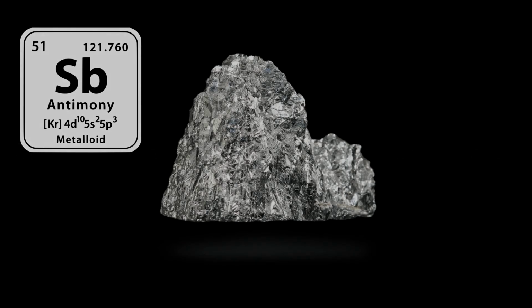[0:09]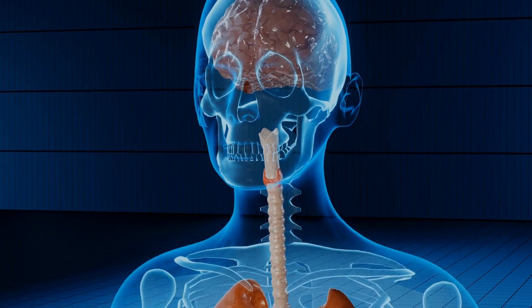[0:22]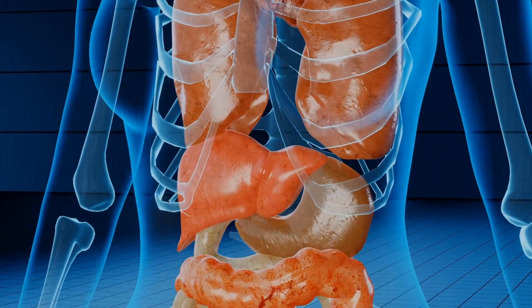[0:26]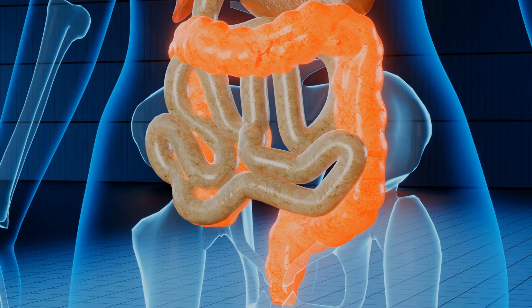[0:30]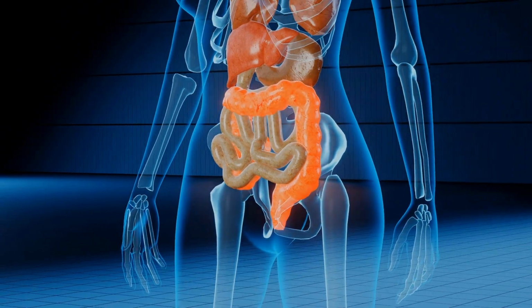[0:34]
Today I will show you how to build an antimony pH meter. It would be suitable for a lab on a chip as it can be miniaturized. It has already been used in medicine as a gastric probe to measure the pH value of stomach acid. Further applications in medicine would be to measure the pH value of blood or urine.
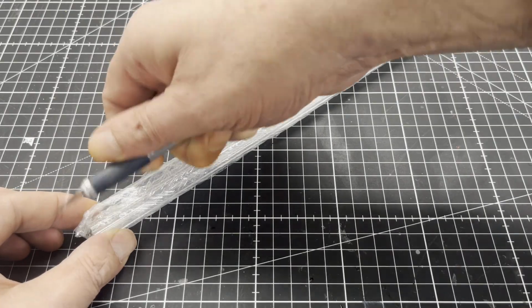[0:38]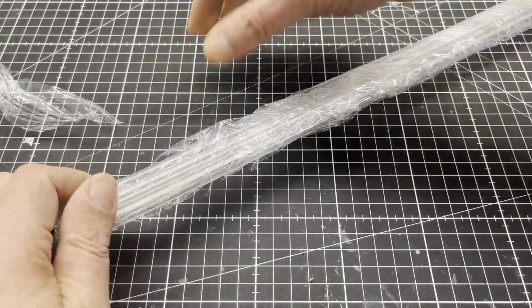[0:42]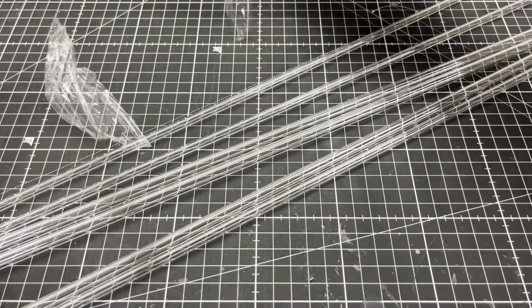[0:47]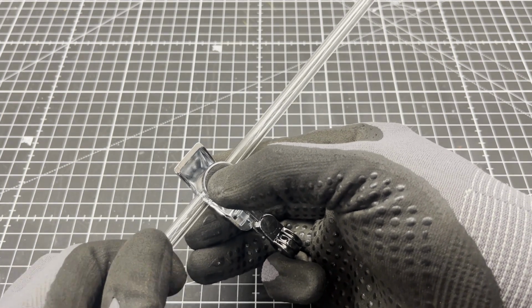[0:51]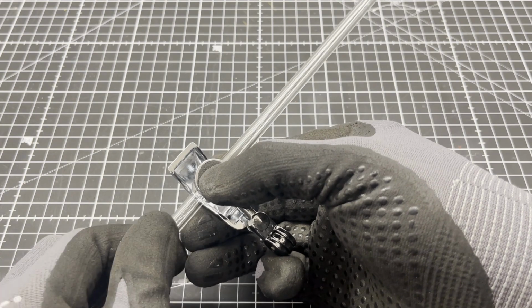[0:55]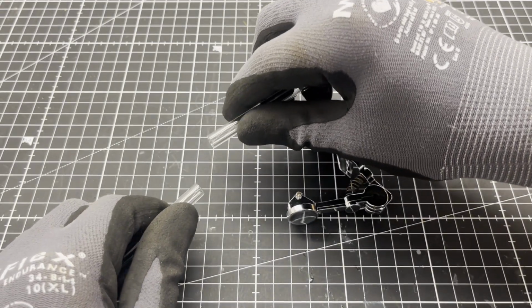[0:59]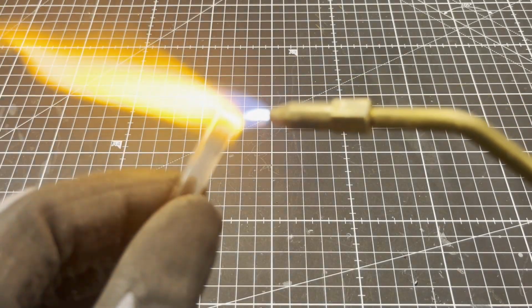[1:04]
So let's get started. I picked up borosilicate glass tubing 8 by 1.5 and 6 by 1.5 millimeters from a local glass blowing company. I used a glass tube cutter to cut 100 millimeters of the 6 millimeter glass tube to size. Then I fire polished the sharp ends of the glass tube.
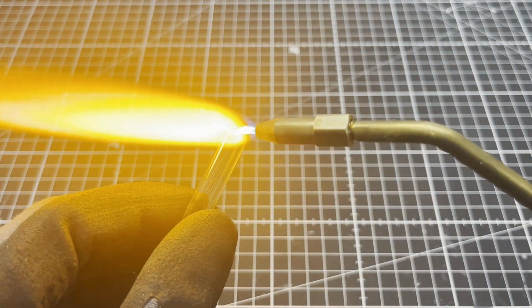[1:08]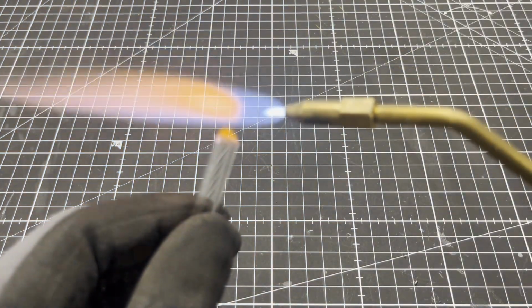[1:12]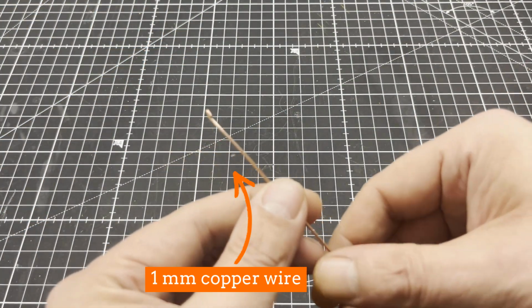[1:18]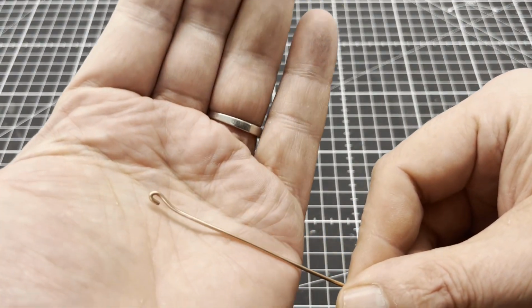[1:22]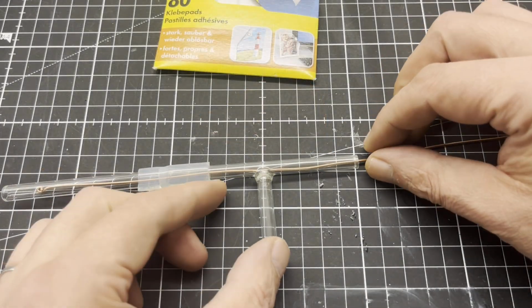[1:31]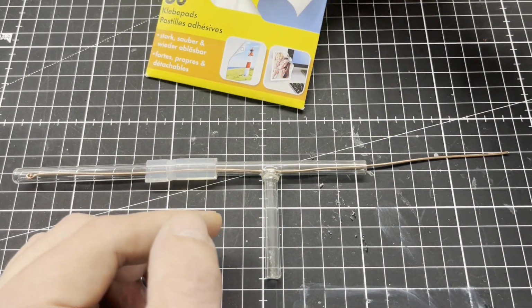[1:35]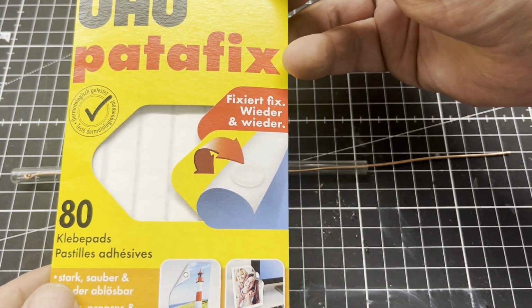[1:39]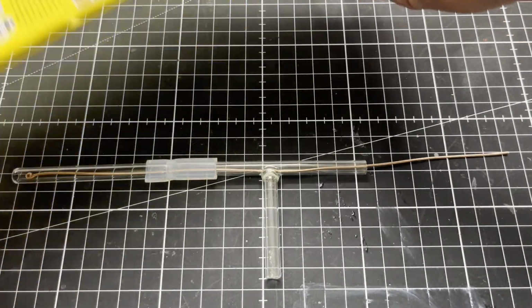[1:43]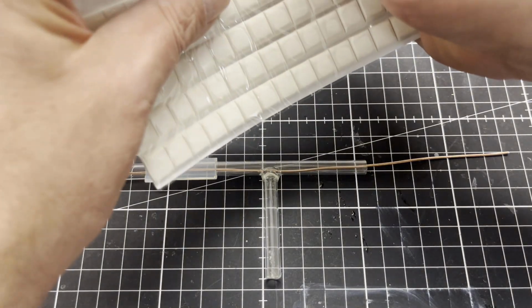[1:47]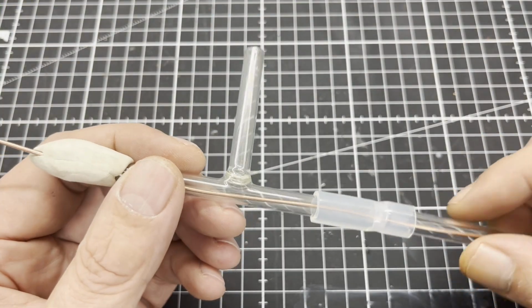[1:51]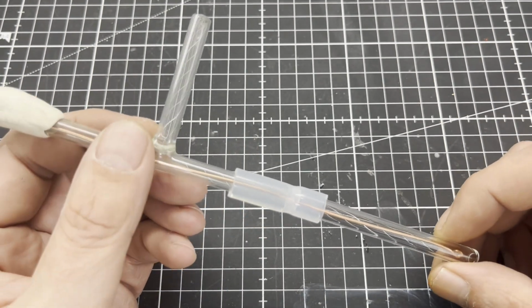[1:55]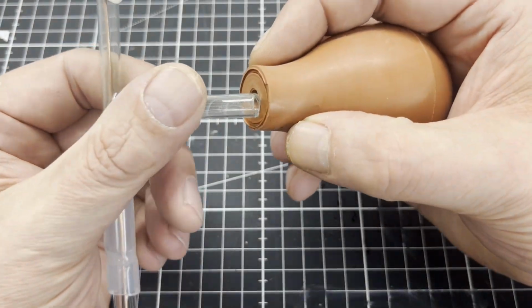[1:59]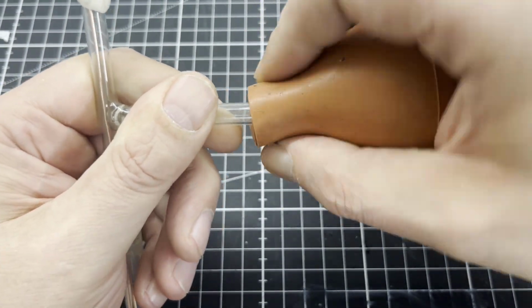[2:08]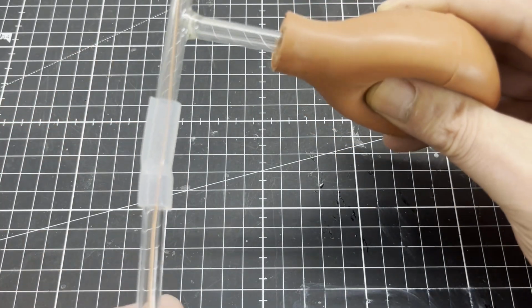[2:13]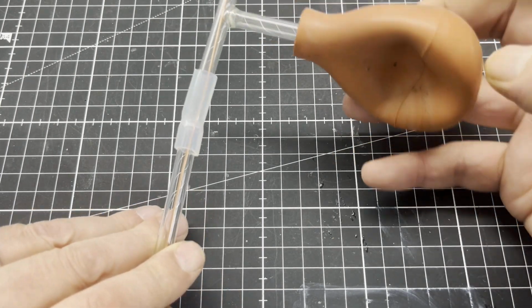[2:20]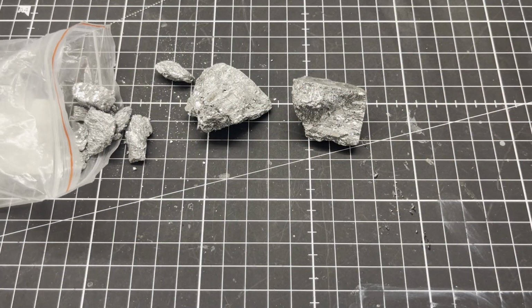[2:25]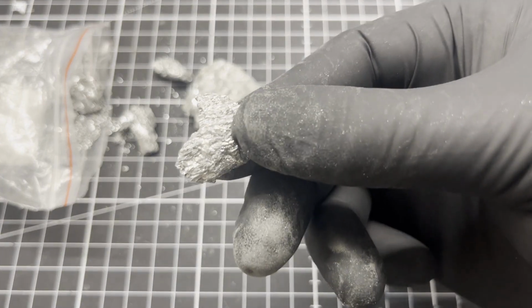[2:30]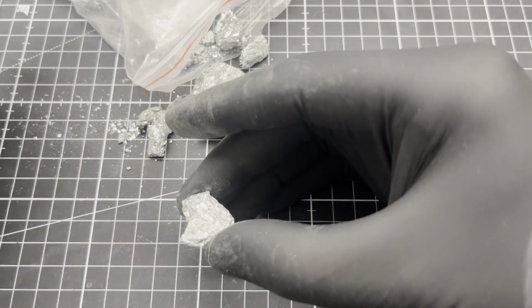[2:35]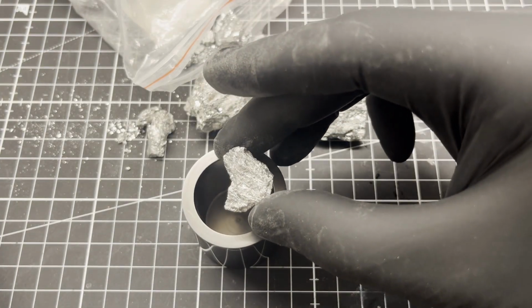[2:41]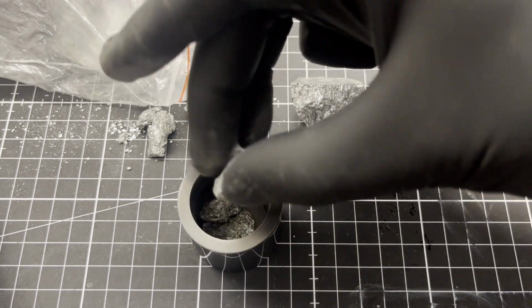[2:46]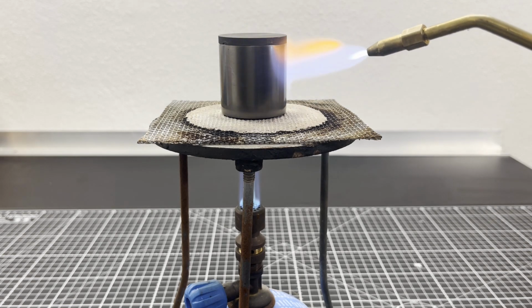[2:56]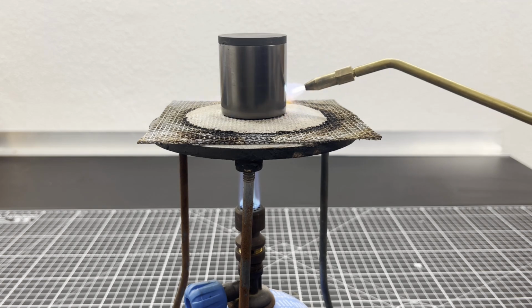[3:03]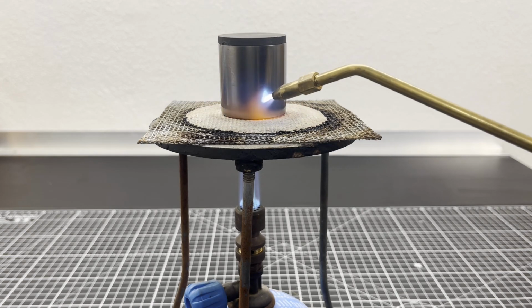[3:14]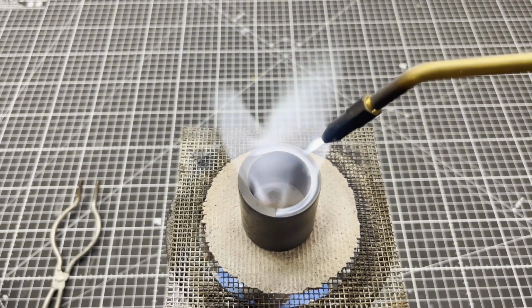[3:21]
The small apparatus is used to suck liquid antimony into the 6 mm glass tube. I strongly recommend using a graphite crucible, as the forming antimony trioxide is reduced back to elemental antimony when heated with carbon. The blue flame you see here is burning carbon monoxide.
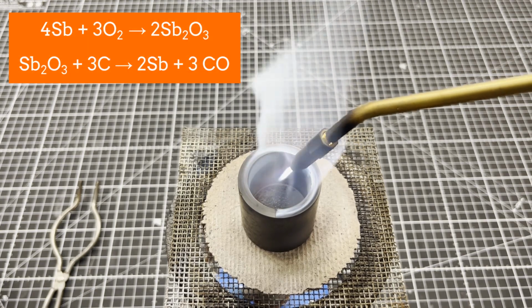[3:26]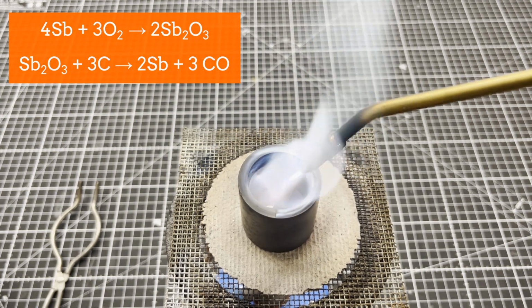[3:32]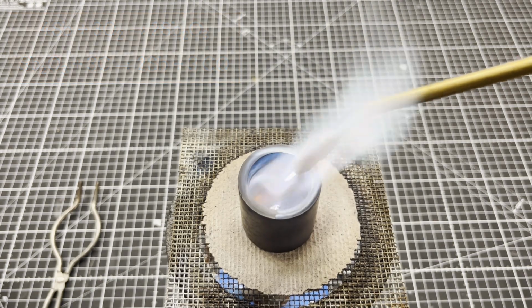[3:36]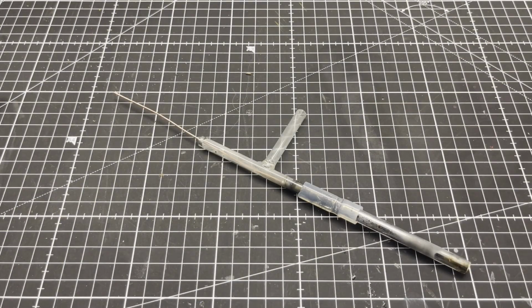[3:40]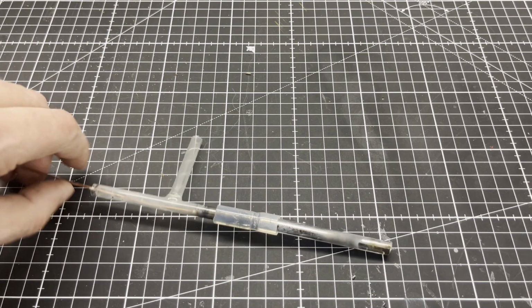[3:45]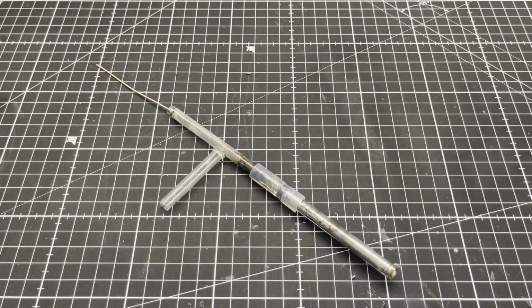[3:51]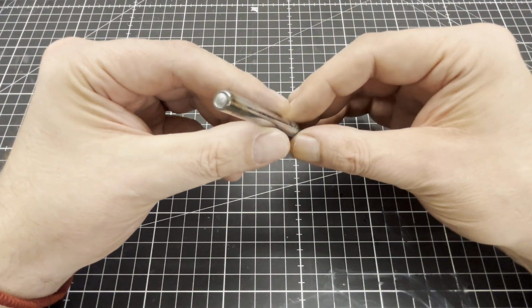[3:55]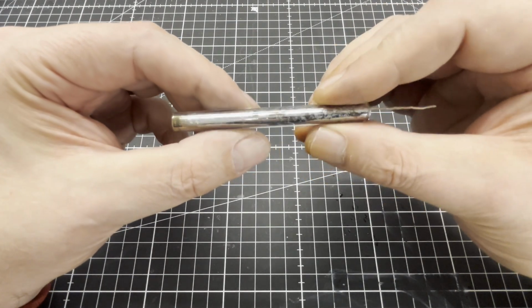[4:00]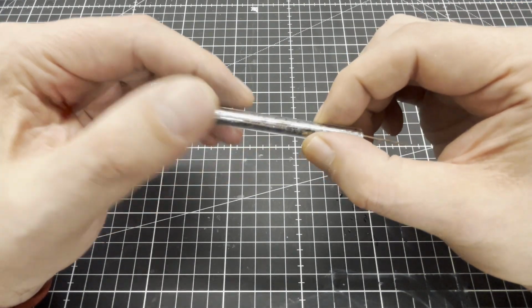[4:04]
After the antimony had melted, I dipped the apparatus with a squeezed suction ball into the antimony and then released the ball so that the liquid antimony rushed into the 6 mm glass tube. Unfortunately, I lost this footage. Here you can see the antimony electrode after it has been removed from the apparatus. The copper wire is also melted in and thus creates a galvanic connection to the antimony.
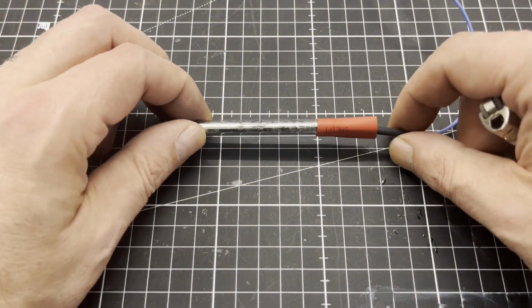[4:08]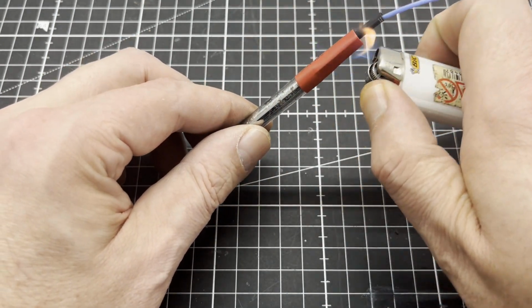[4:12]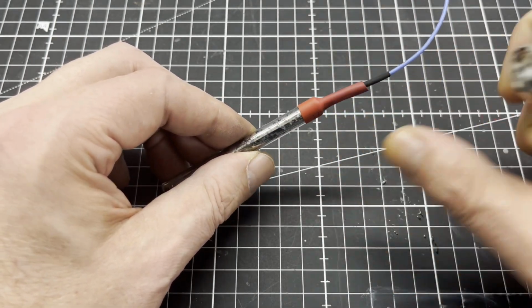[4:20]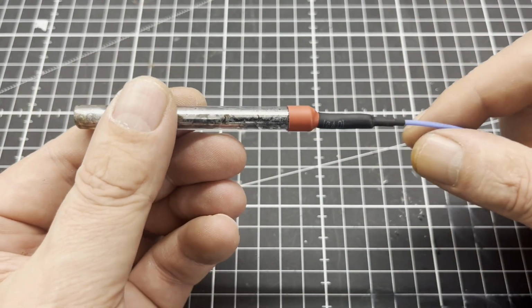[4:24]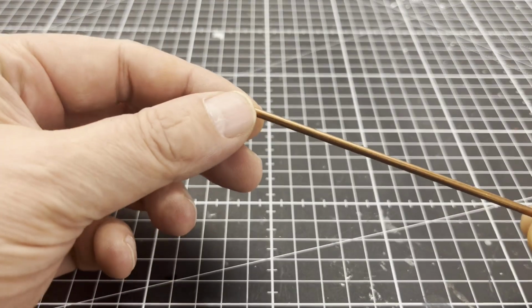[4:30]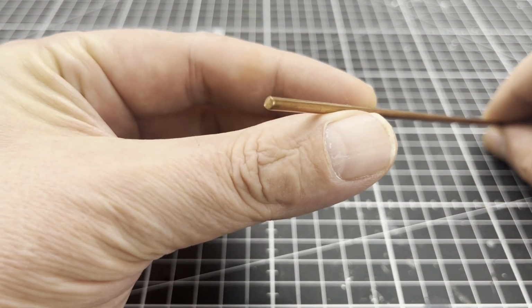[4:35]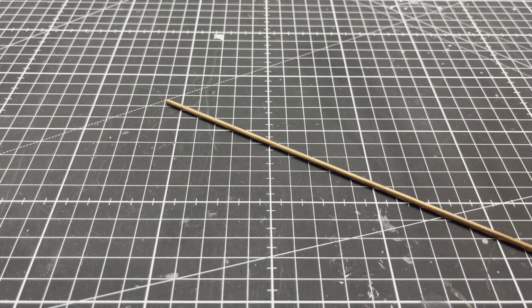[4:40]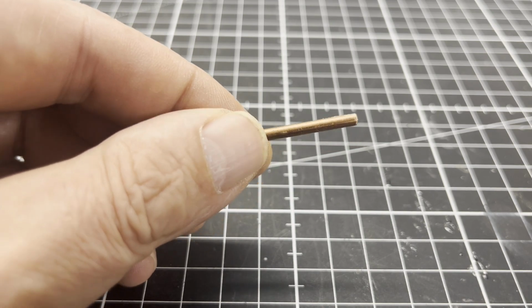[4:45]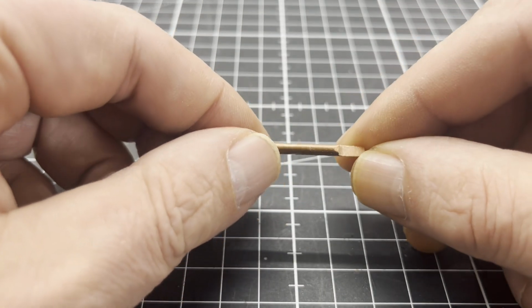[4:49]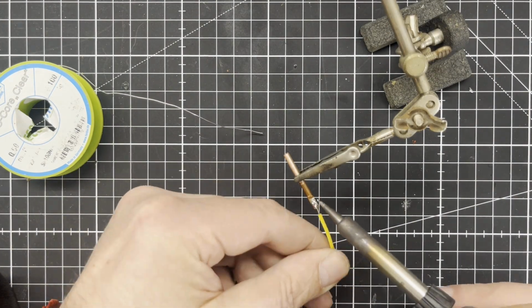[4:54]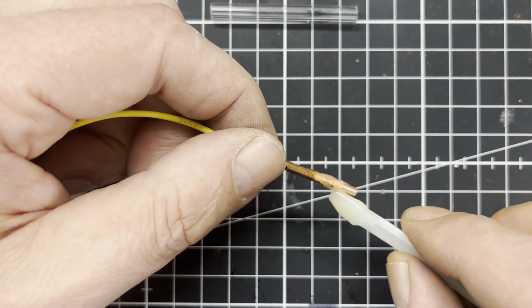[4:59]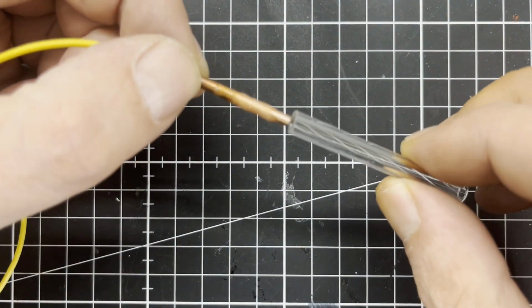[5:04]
Next, I started with a copper-copper-2 sulfate electrode. This requires a copper rod with a diameter of 3 mm and a 50 mm long piece of the 3 by 1.5 mm glass tube. I used 2-component epoxy resin to glue the copper rod with soldered wire into the glass tube.
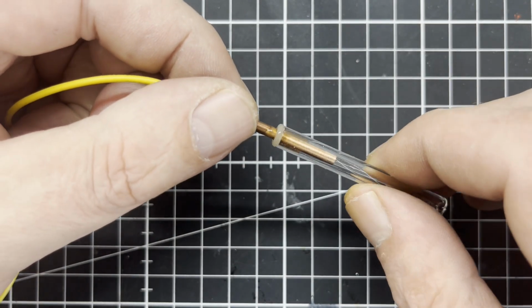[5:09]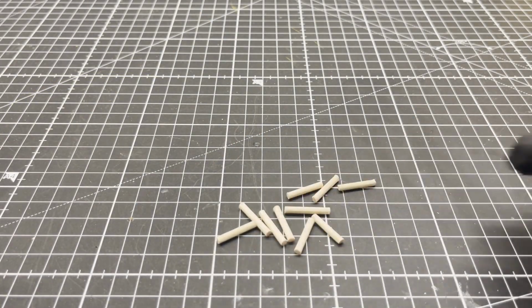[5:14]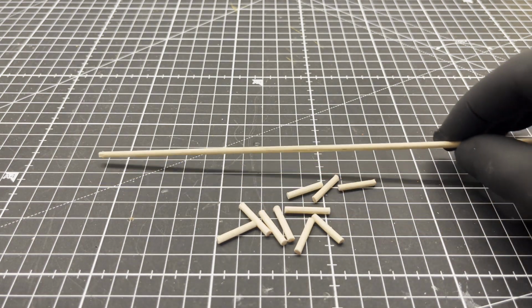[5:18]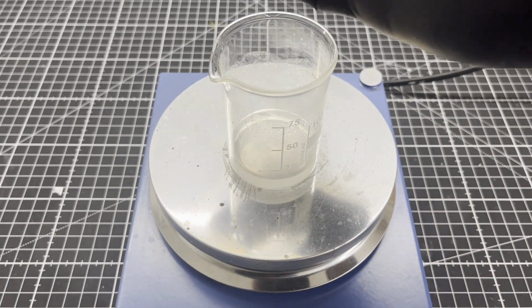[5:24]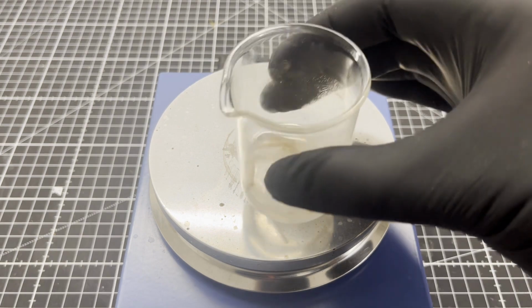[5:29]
While the epoxy resin was hardening, I prepared wooden round sticks with a diameter of 3 mm. You can also use toothpicks if the diameter is suitable. The wooden round sticks were then placed in saturated potassium nitrate solution for 24 hours and then dried.
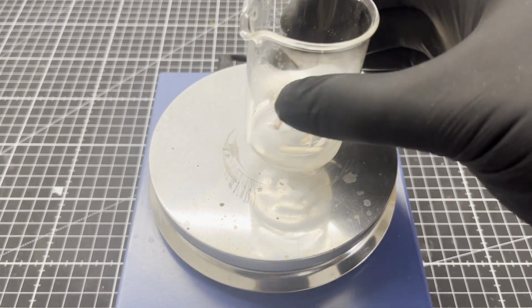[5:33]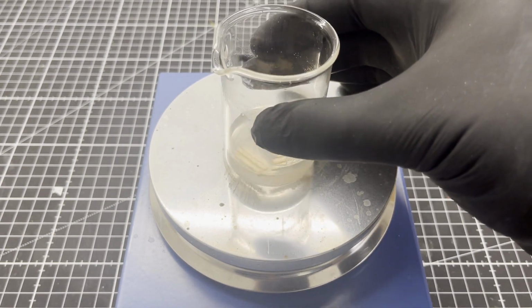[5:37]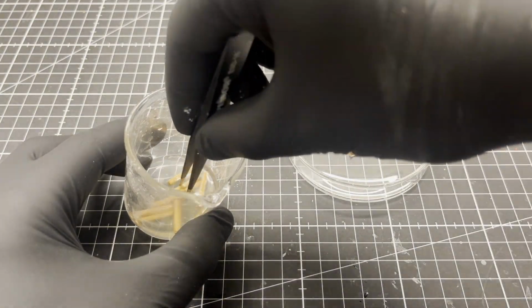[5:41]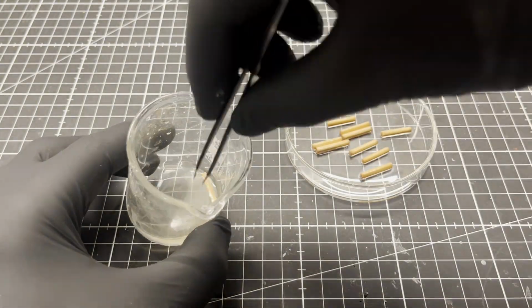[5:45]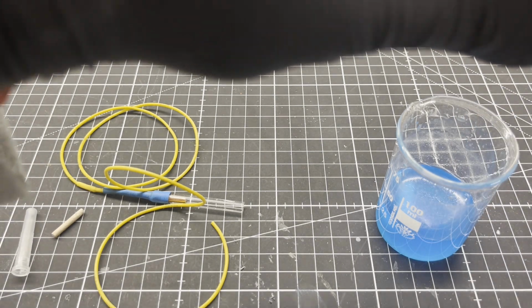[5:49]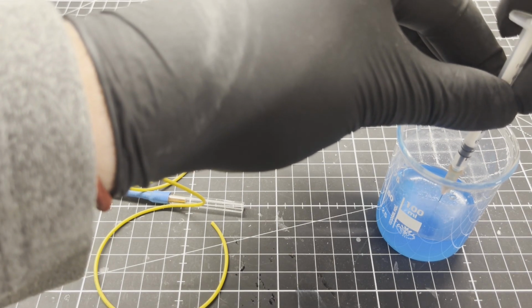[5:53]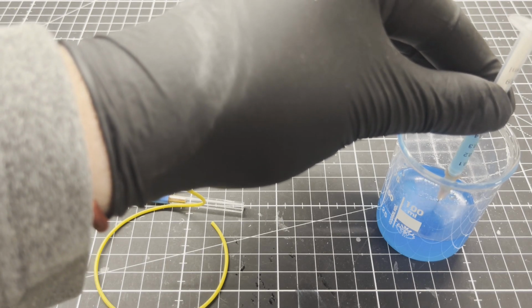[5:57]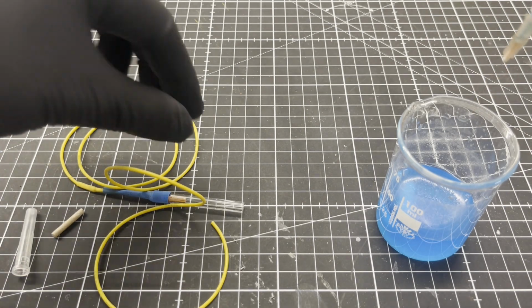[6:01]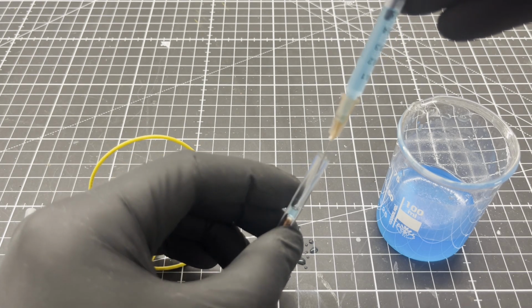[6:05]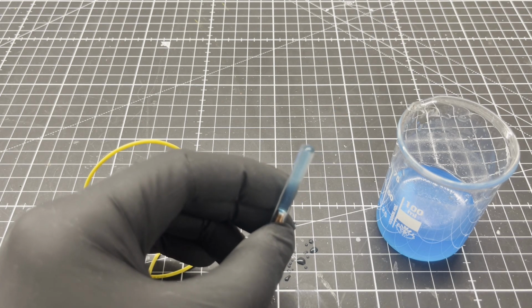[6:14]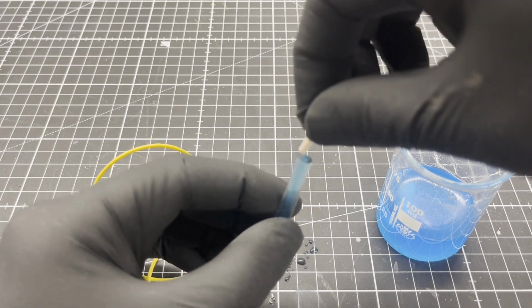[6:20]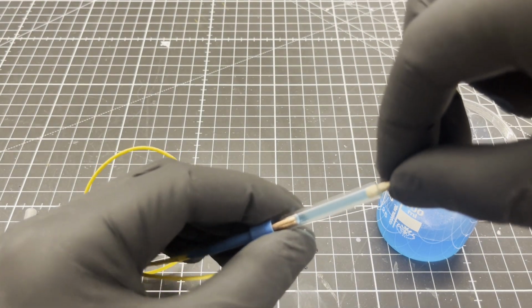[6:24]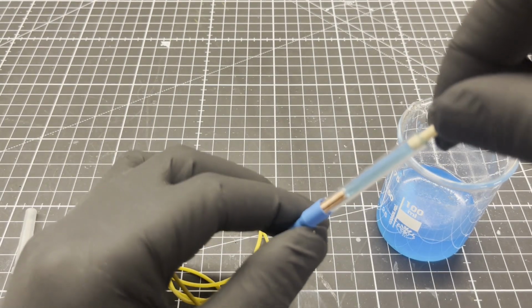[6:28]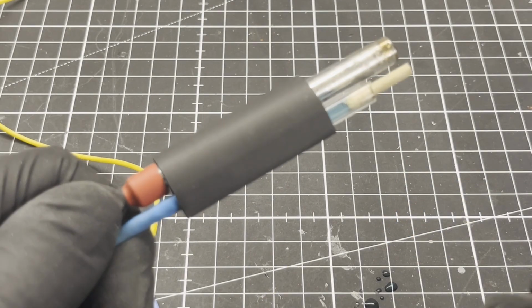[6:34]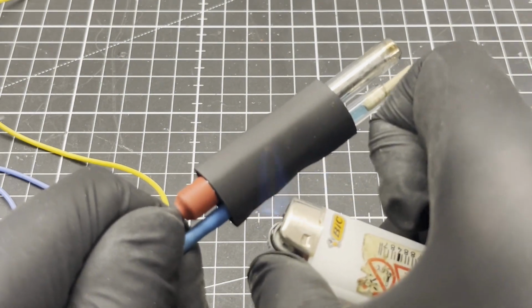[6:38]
Using a disposable syringe, 1 mL copper sulfate solution was then transferred into the glass tube and subsequently sealed with a round wooden stick treated with potassium nitrate. Care must be taken to ensure that no air bubbles are trapped. Finally, a bit of shrink tubing and the antimony pH probe was ready to use.
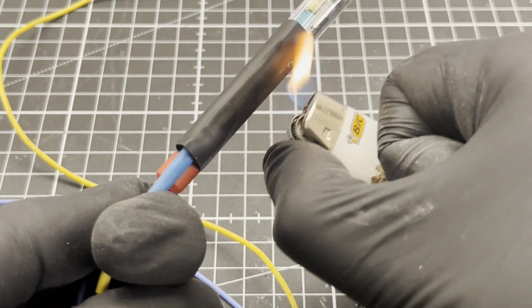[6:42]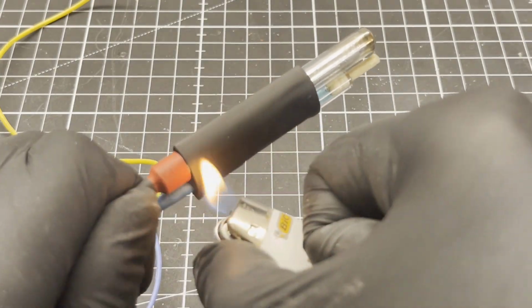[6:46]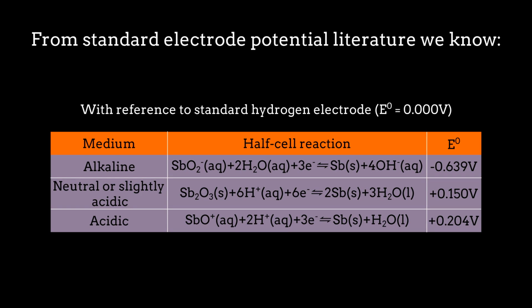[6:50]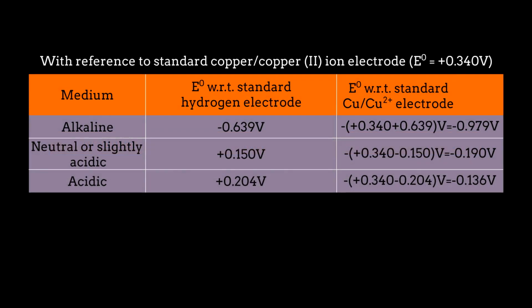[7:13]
Now a little bit of theory. According to the Nernst equation, the half cell formed by oxidation state 3, SbO2 minus, Sb2O3 and SbO plus involves H plus or OH minus, and generates an EMF, which depends on the concentration of H plus over the entire pH range. The chemical cell formed during pH measurement is therefore...
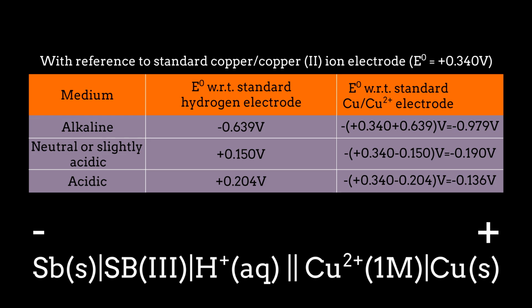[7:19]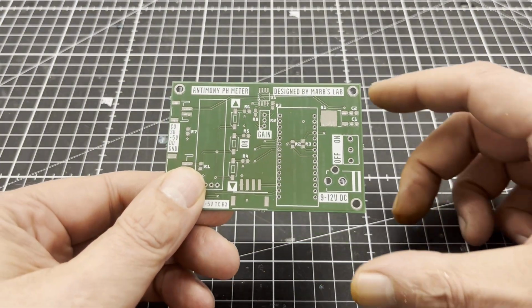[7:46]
Theoretically, we should obtain a voltage between 0.136 volts and 0.979 volts, which corresponds to a pH value of 1 to 13. Is the pH value linearly dependent on the voltage? I can already tell you, no. So a microcontroller comes in handy to deal with it. As usual, I designed a PCB, had it manufactured by my PCB fab and populated it myself.
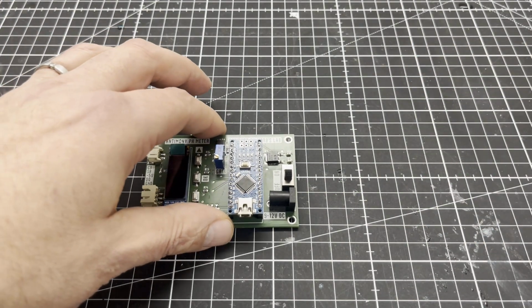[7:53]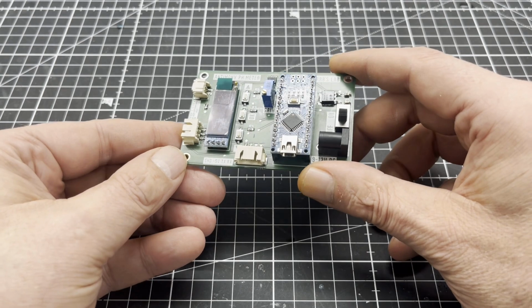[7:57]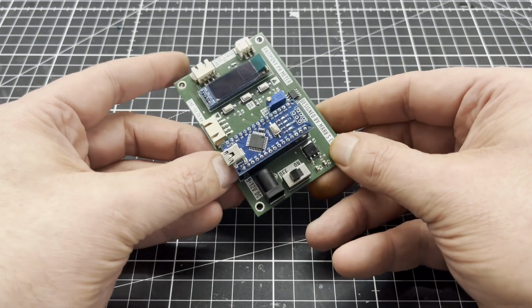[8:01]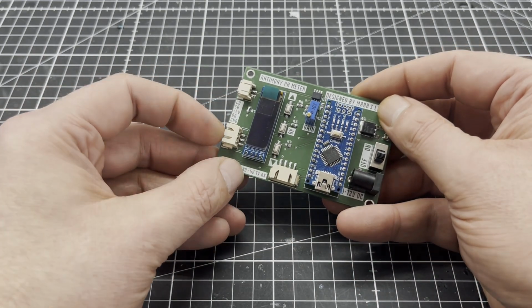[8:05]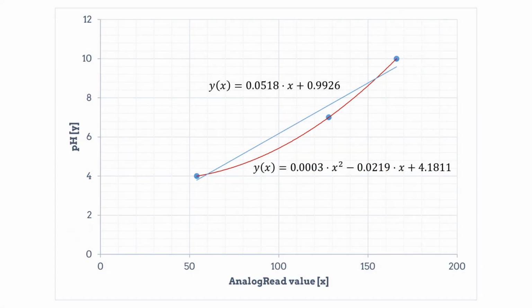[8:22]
And for the sake of completeness, the schematics of the PCB. Next, I made some off-camera measurements to obtain a function by regression analysis that can be used to calculate the pH value by the measured voltage. As you can see, the pH value is not linearly dependent on the voltage.
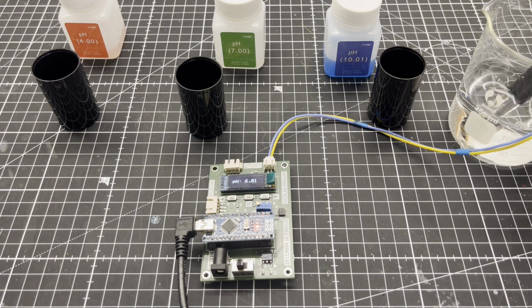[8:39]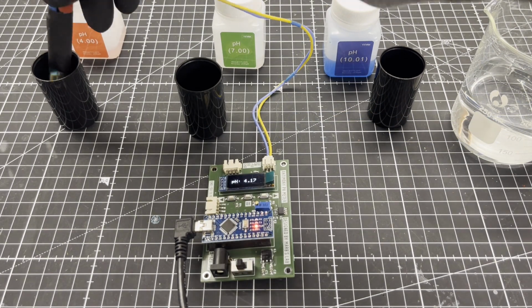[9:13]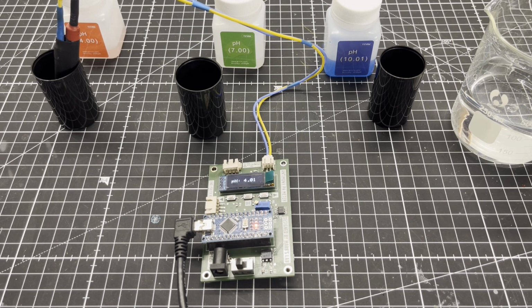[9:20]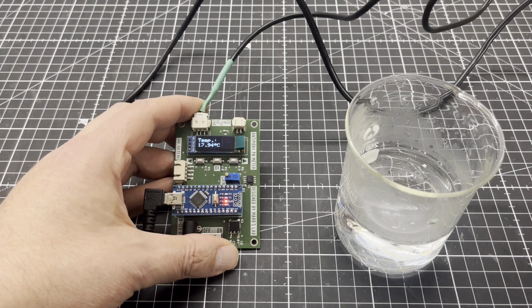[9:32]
Here you can see a time lapse of a few measurements I made with pH calibration solutions. The response is slower than with a conventional glass electrode. As the pH value also depends on the temperature, the PCB has a connector for a DS18B20 temperature sensor, with a wide measuring range from minus 55 degrees Celsius to 125 degrees Celsius.